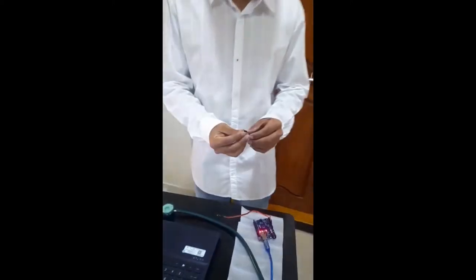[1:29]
This is Team 16, myself Jadav Aryan from the EC department. My other teammates are Nikit, Matai Manoj and Amgoto Abhiram Nayak. We have been working on this project for the last 4 weeks and we have finally made it. Our project is an electronic stethoscope. I worked on the hardware part and a little bit on the software part.
I have helped them. The aim of this project is that the electronic stethoscope converts the acoustic sound waves obtained through the chest piece into an electrical signal. The electrical signal can be transmitted to computers and laptops. The electronic stethoscope overcomes the low sound levels by electrically amplifying them. These are the body sounds produced by the heart and lungs when blood flows through the arteries and veins.
The materials required for making the electronic stethoscope are the usual stethoscope, the Arduino Uno R3, and a microphone, which I used in this project is the MAX4466, jumper wires, and finally a USB which connects the Arduino and the laptop. The software used in this project is the Arduino IDE, which plots the graph digitally. Now let's see how our project works.
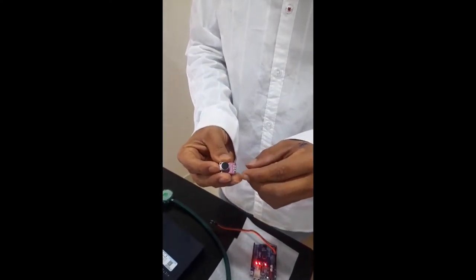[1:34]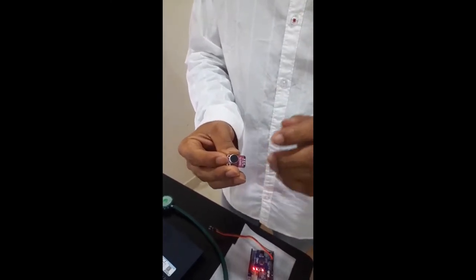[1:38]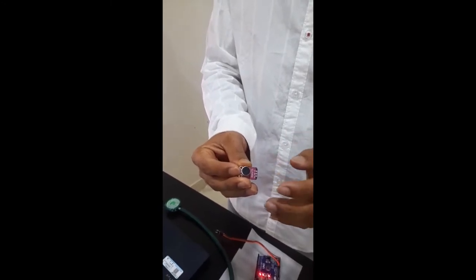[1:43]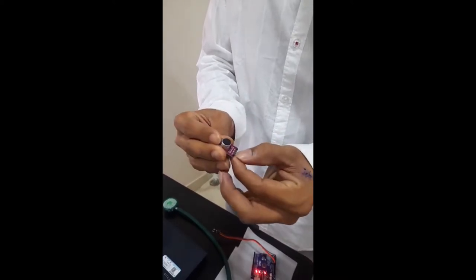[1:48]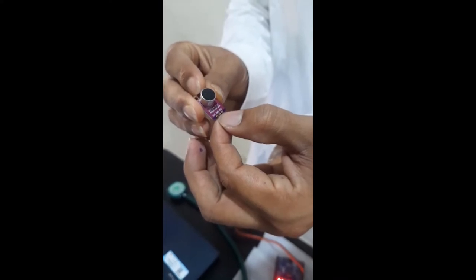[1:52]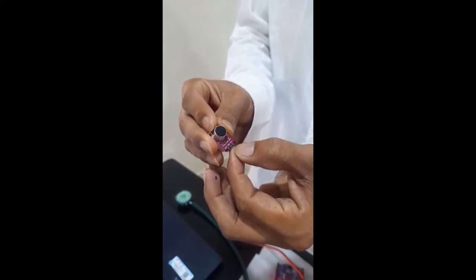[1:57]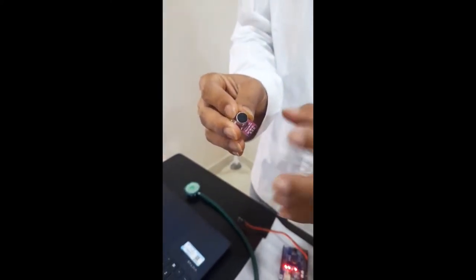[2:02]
And this is the microphone. As we see in our study, the microphone is the MAX4466. A microphone is an input device, a transducer that converts sound waves into an electrical signal. We can see the MAX4466 has 3 pins. One is the output pin, one is the ground pin, and one is the VCC pin. The VCC stands for voltage common collector, and it is the power input of a device.
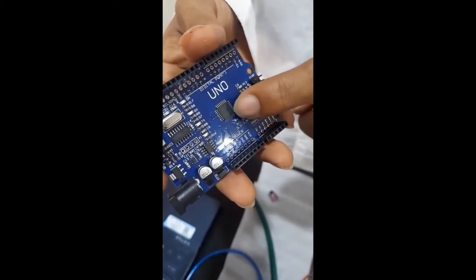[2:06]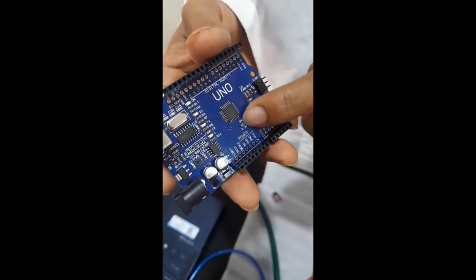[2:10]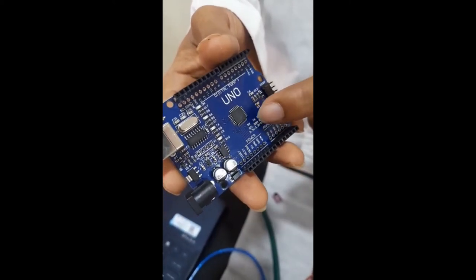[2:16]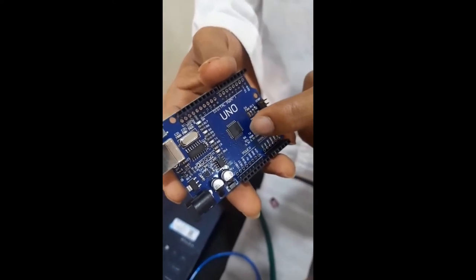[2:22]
As we see, this is a microcontroller. It is the brain of an Arduino. It has 28 pins. The microcontroller used on a UNO board is the Atmega328P. It has a flash memory of 32 KB, and the program loaded from the Arduino IDE is stored in it.
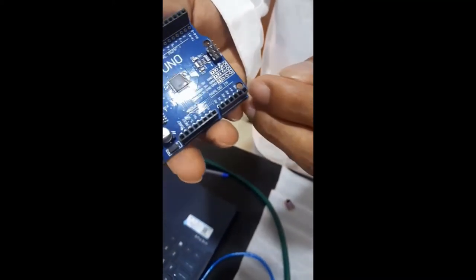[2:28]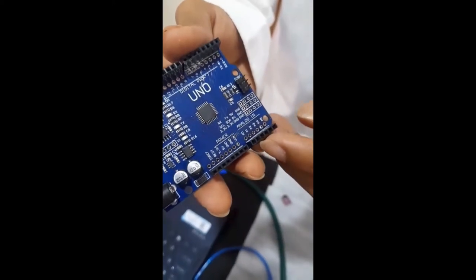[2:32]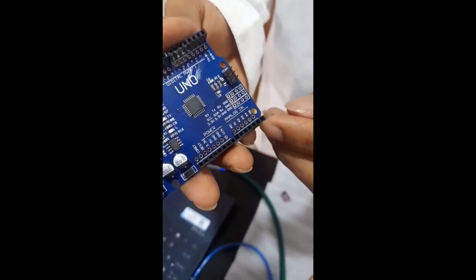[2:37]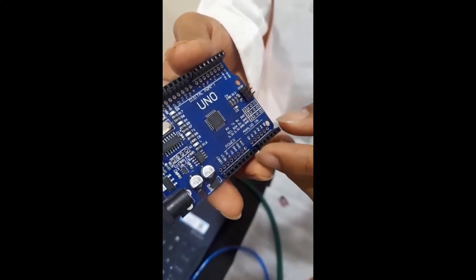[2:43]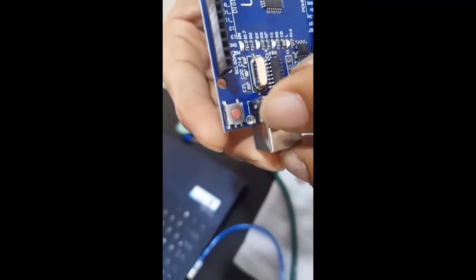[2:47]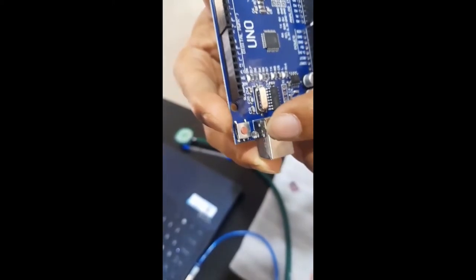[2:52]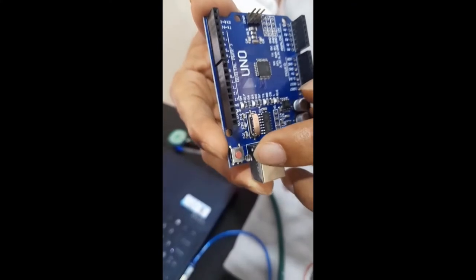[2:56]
And we see it has 6 analog pins labeled 0 to 5. These pins measure just voltage, not current, because they have high internal resistance. These pins can also be used for digital input or output. As we see the reset button in red color, when the switch is clicked, it sends a logical pulse to the reset pin of the microcontroller, which runs the program from the start.
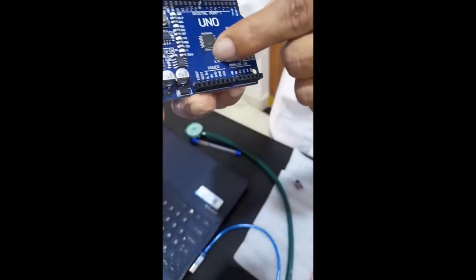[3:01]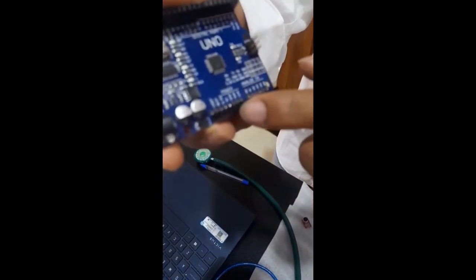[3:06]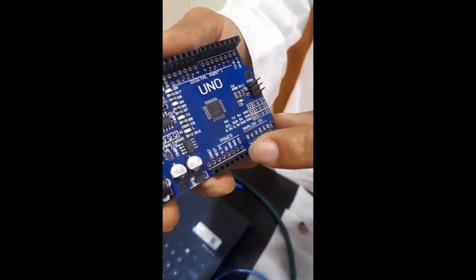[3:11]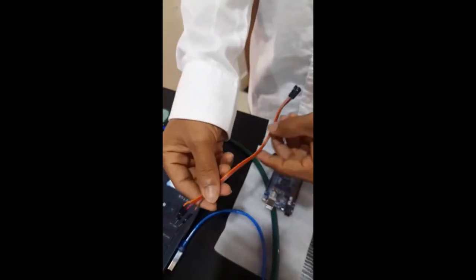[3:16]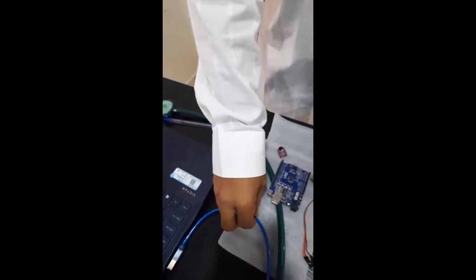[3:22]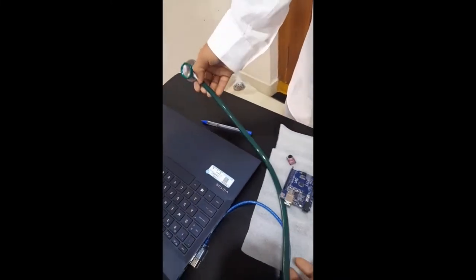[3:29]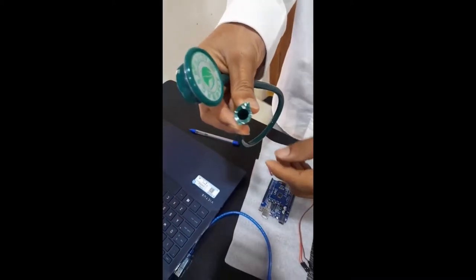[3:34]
And this is the power source of the Arduino Uno. We can see it has 3.3 volt, 5 volt, and ground. Now these are the jumper wires we have used to connect the microphone and the Arduino Uno. And this is the USB which connects the Arduino Uno to the laptop. I used the stethoscope and cut it from the bottom to fix a microphone in it.
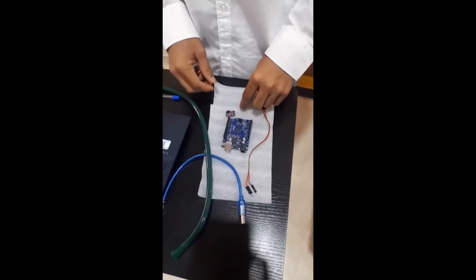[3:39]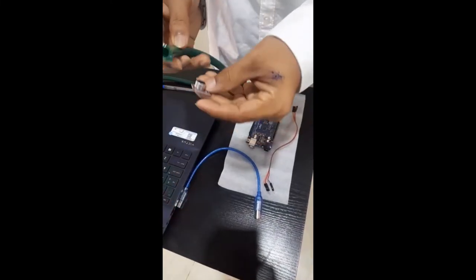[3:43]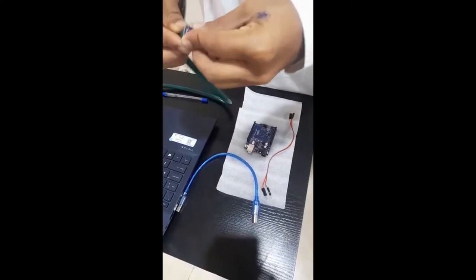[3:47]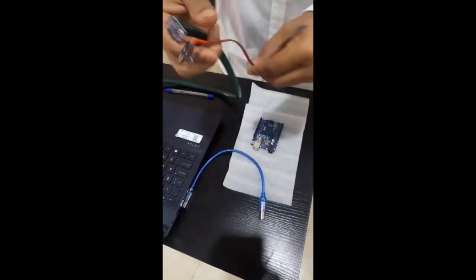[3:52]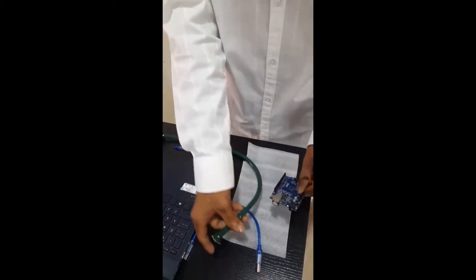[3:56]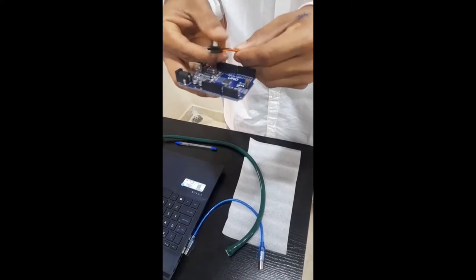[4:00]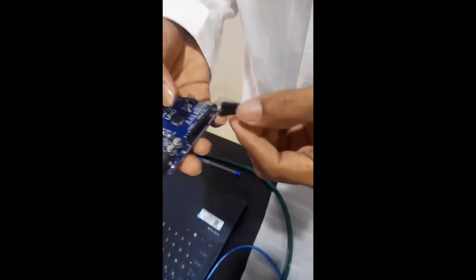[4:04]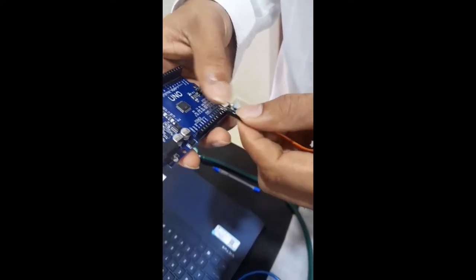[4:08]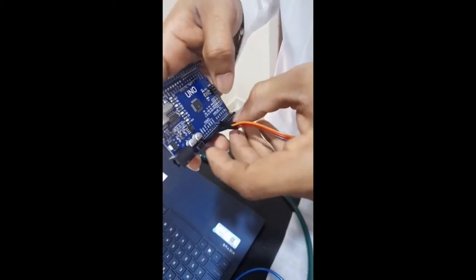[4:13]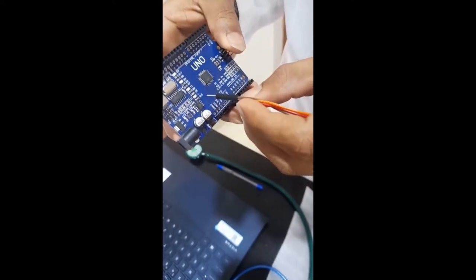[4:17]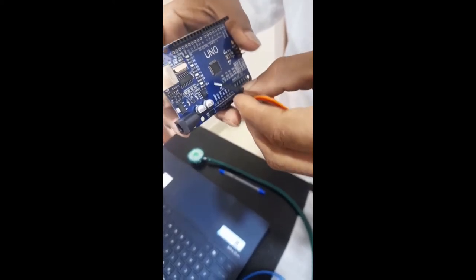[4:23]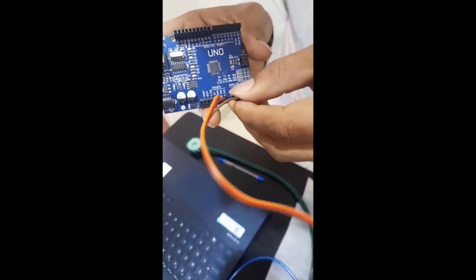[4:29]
Now we will assemble the parts to see the results. This is the microphone, and this is the hole. As we see, I have just fixed the microphone in a stethoscope. The orange wire I have connected to the 5 volt power source, one for the ground, and one for the analog pin A0.
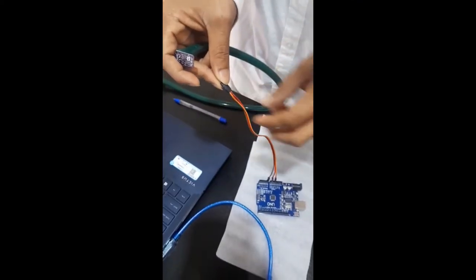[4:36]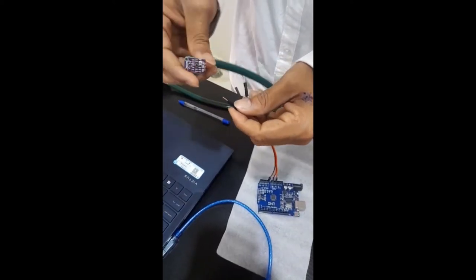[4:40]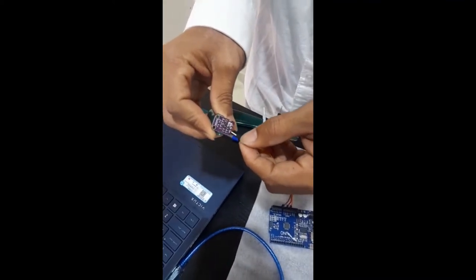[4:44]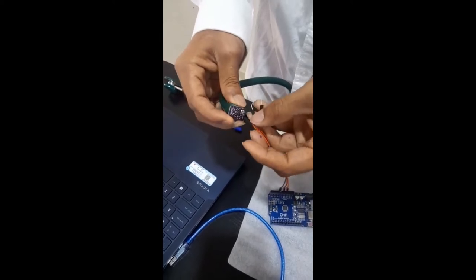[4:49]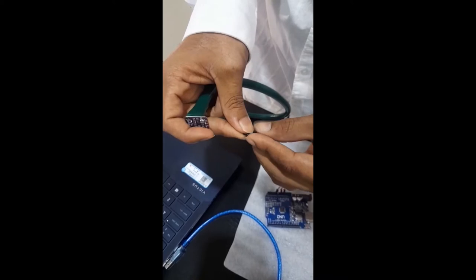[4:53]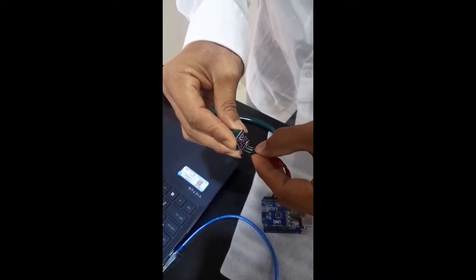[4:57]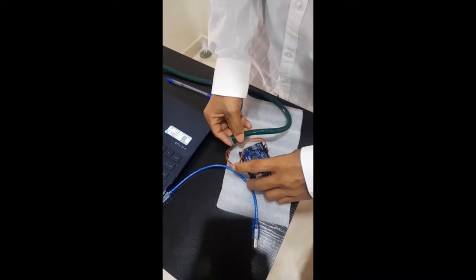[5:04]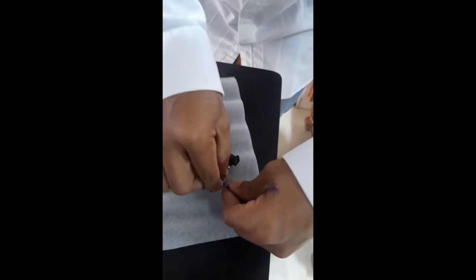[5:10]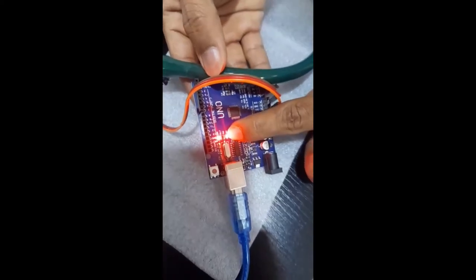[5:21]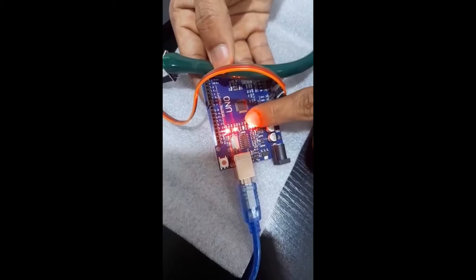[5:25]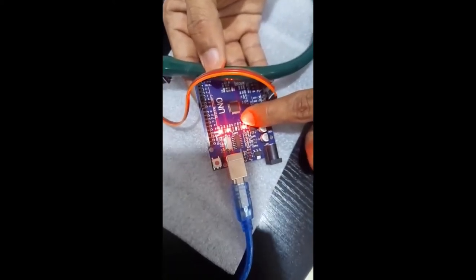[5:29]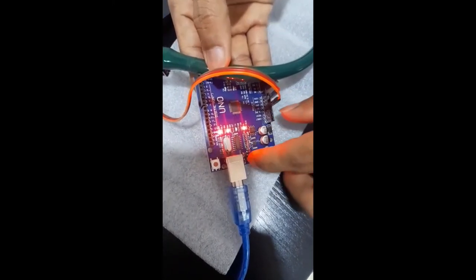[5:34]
As you see, the orange wire which is connected to the 5 volt power source is connected to the VCC, the voltage common collector of the microphone, and the ground is connected to the ground, and the output is connected to the analog pin A0. Successfully connected, and the USB too. As you see, it shows TX and RX. TX stands for transmit and RX stands for receive. The indicator LED blinks whenever the UNO board is transmitting or receiving data.
Now let us see the code. As we know, these are the multi-line comments which are not involved in the code. Now let us go to the setup. We use the begin function of the serial library to initialize our serial communication, and we send a standard baud rate of 9600. The baud rate is defined as the rate at which information is transmitted in a communication channel.
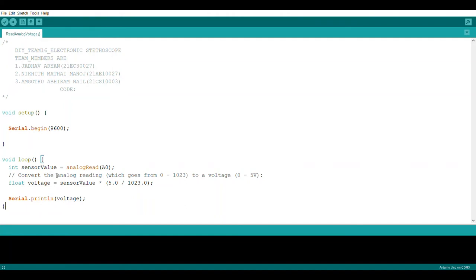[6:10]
Now we go to the loop, which runs over and over again once it is executed. Now we set up a variable for declaration and initialization. We set up a variable named sensorValue initialized to the analog read of A0. The analog read is an integer that goes from 0 to 1023. 0 refers to 0 volts and 1023 units refers to 5 volts.
Then we set up a new variable called voltage. We use the float type for the decimal points. Now we set the voltage equal to sensorValue times 5 divided by 1023 units, and we send the voltage to the println function from the serial library so that we can see it on a serial plotter or a serial monitor on the Arduino IDE. This is the serial print of the voltage.
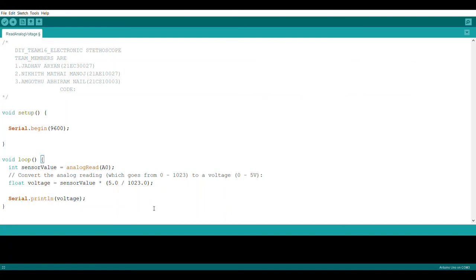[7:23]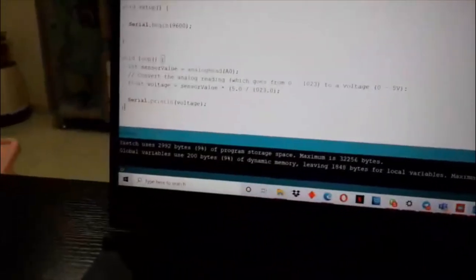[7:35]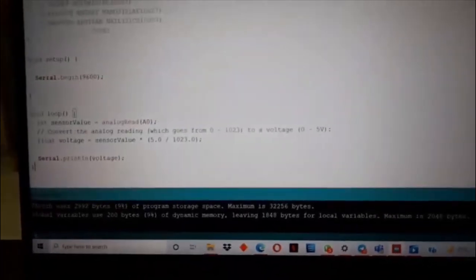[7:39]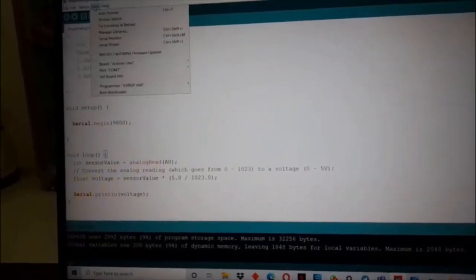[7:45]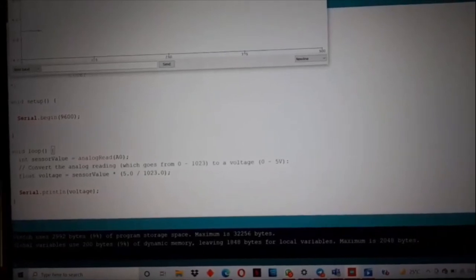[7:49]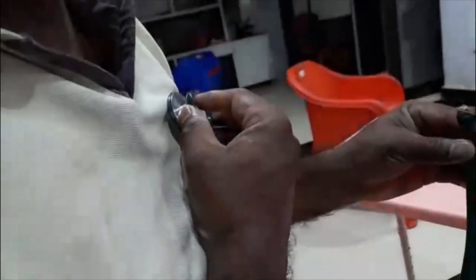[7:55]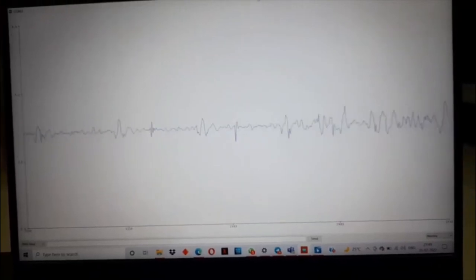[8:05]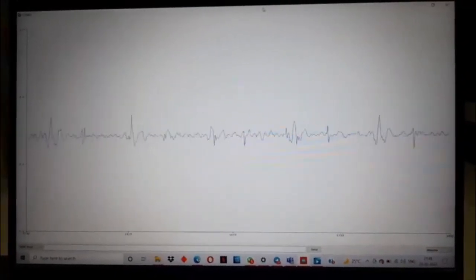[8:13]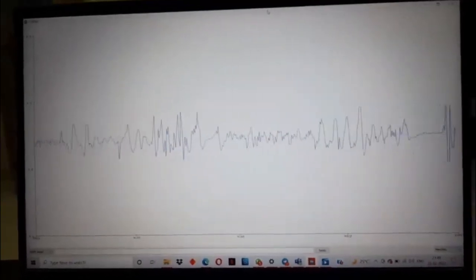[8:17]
Now let's compile the code by uploading it. It shows uploading and then it shows done uploading. When I open the serial plotter, it shows the graph. It is the voltage versus time graph. Thank you everyone.